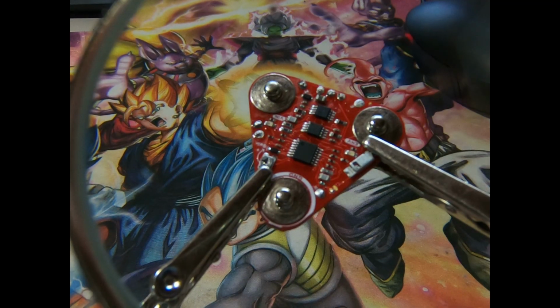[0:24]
Today, we're diving into the wild world of human-machine interface. I'm hooked up to a MyoWare EMG sensor, which I'll be using to control a servo motor, using nothing but my incredible muscles. So let's get into it.
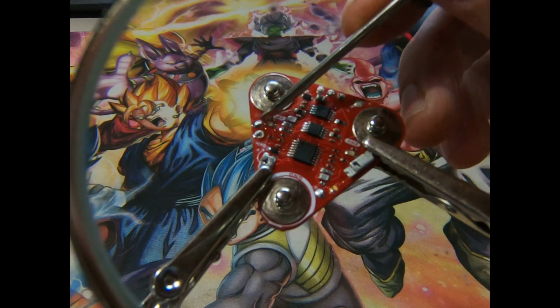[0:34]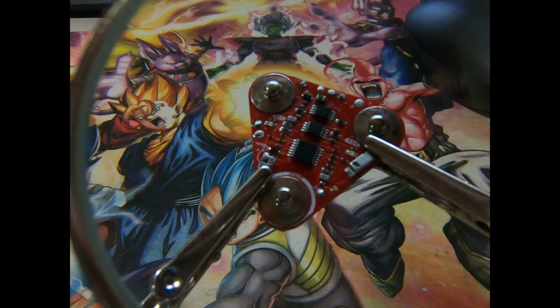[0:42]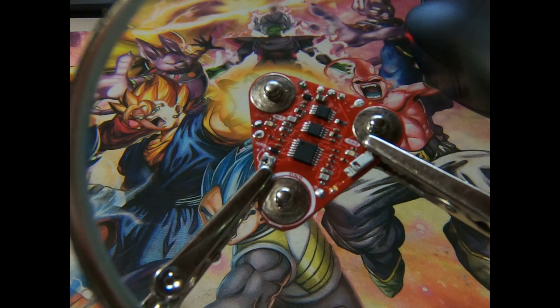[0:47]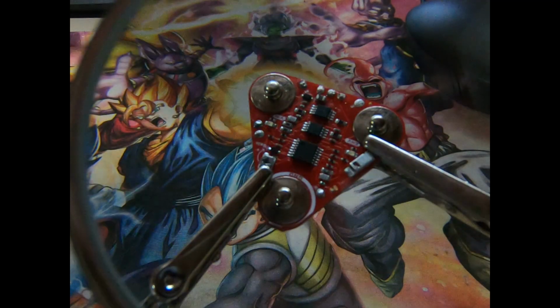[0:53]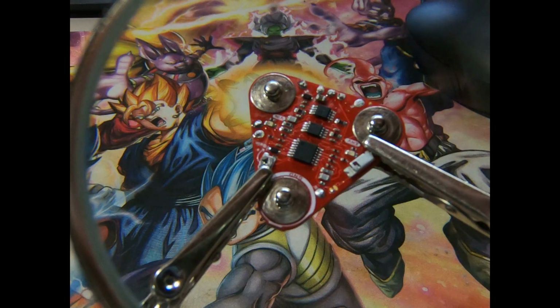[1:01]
All right, guys, it's time for confession time. If you watched episode 2, you saw me solder these headers. These three, this one right here, this one, and these two. These header pins are completely backwards. Yep, rookie mistake, I know. All these pins are soldered the wrong way, so I have to desolder them, flip them, and reattach. Moral of the story, double check your component orientation before soldering, especially for breakout boards. This will take me around 20 minutes to fix, but it was a pain I brought on myself.
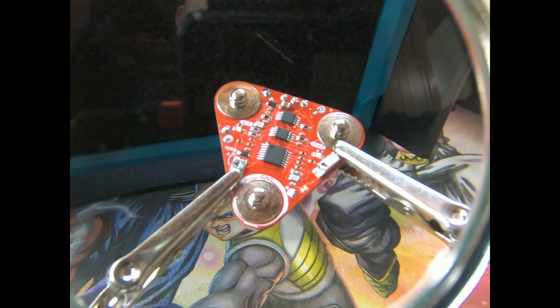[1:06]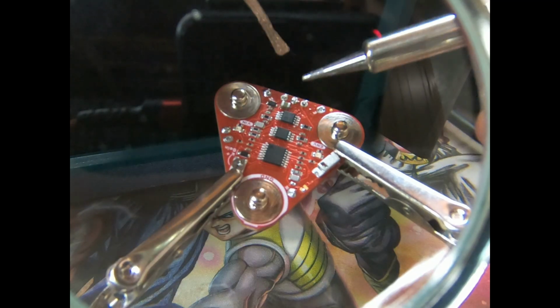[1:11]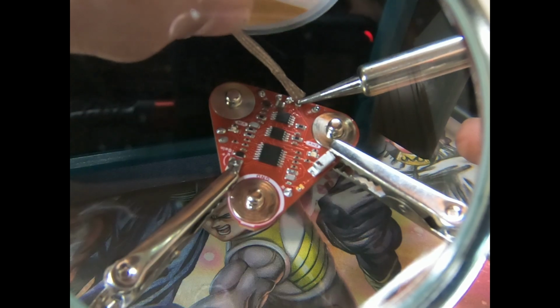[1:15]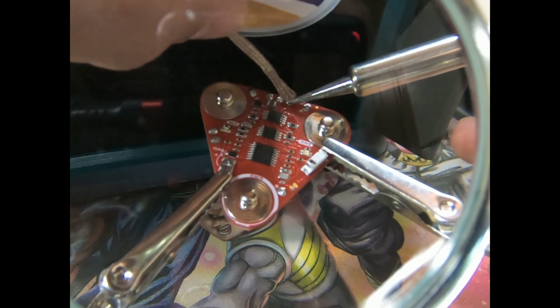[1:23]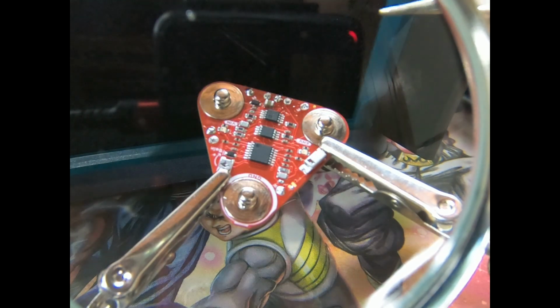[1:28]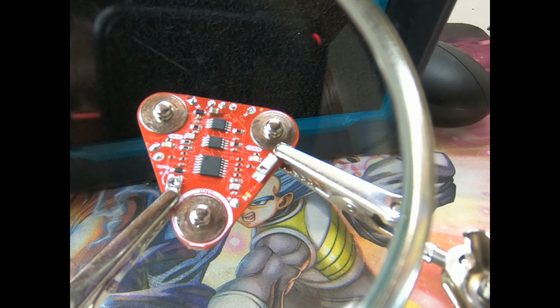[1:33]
This is where the desolder wick comes in handy. You just heat it up. Heat up the component you want to desolder, and stick it on there. And the solder will go through capillary action into the desolder wick. You might want to pull the braids apart a little, just so it increases that capillary action.
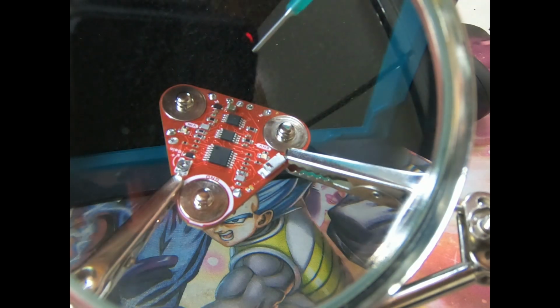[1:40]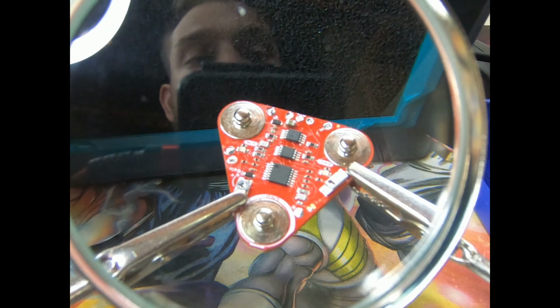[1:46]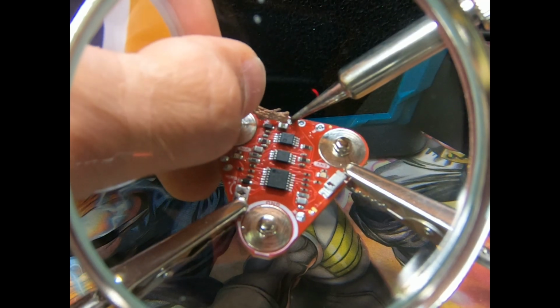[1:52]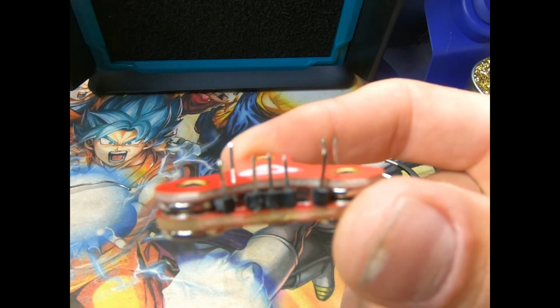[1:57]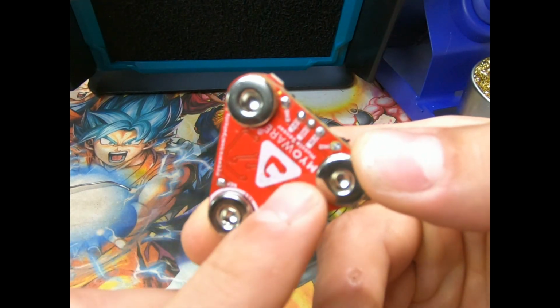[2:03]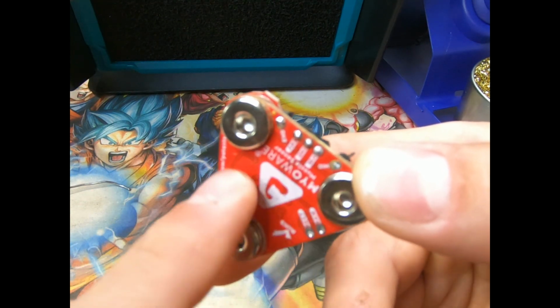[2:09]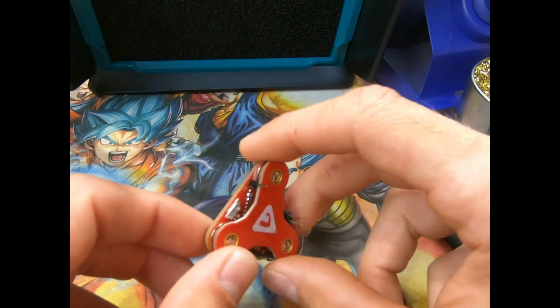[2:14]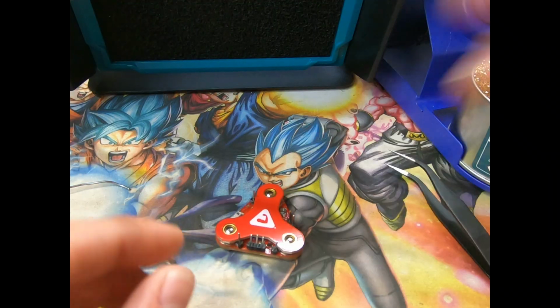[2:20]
Let's add a little bit of flux paste, help this melt a little, and we're going to try again. Just place the tip on the solder. Okay, we're all done. See? This is the side they were supposed to be on, because the way that I had them, they would interfere with the electrodes that go to my skin. So I'm just gonna clean it up with some alcohol, and then we'll start troubleshooting this, see if it works.
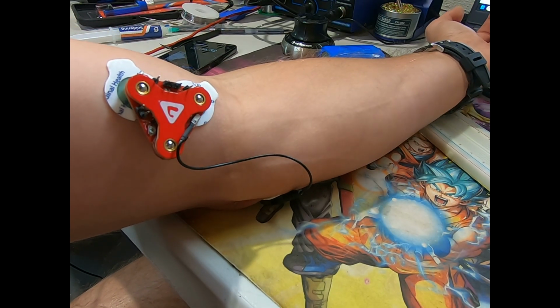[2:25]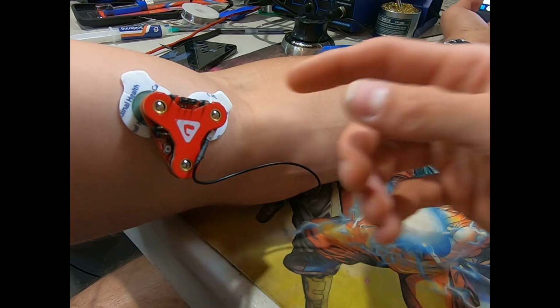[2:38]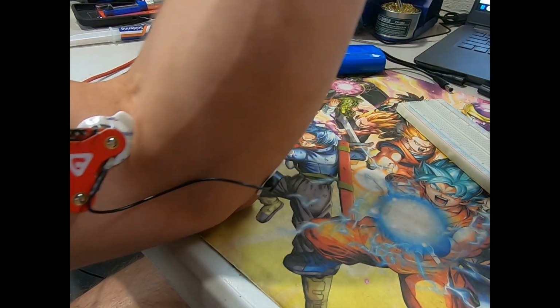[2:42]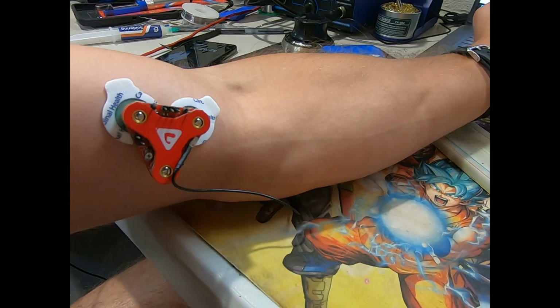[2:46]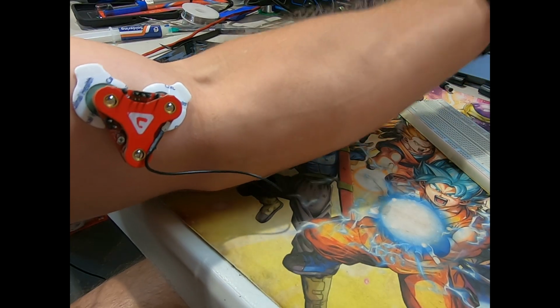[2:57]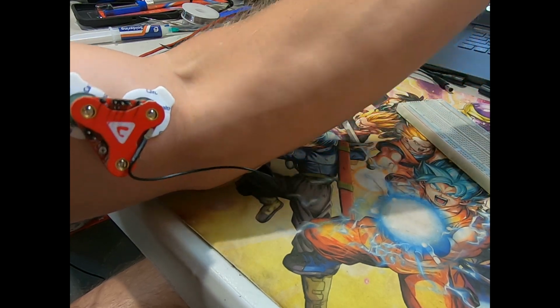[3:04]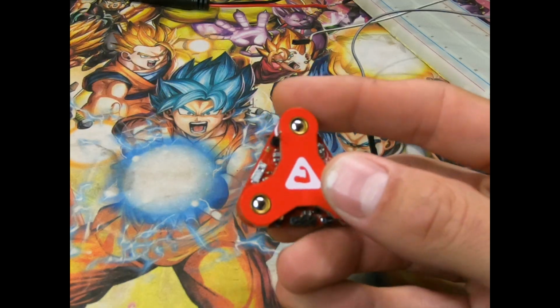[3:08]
So what's a MyoWare EMG sensor? The MyoWare 2.0 is an EMG sensor. EMG stands for electromyograph. This means it reads the electrical activity of your muscles. You stick it on your skin with these sticky electrodes and flex. This outputs an analog voltage based on your muscle tension. Super cool, right? For our exoskeleton, that means we can control a servo motor to move a 3D printed joint. This is perfect for robotic nerds like us who want to build assistive tech. Okay.
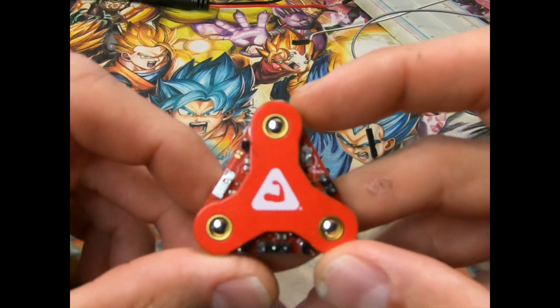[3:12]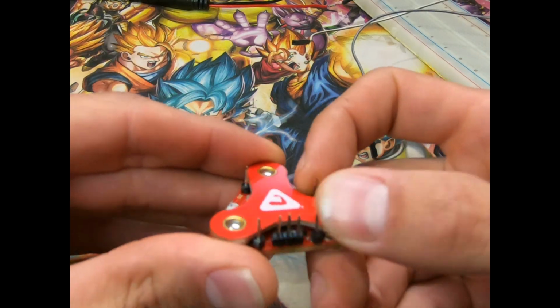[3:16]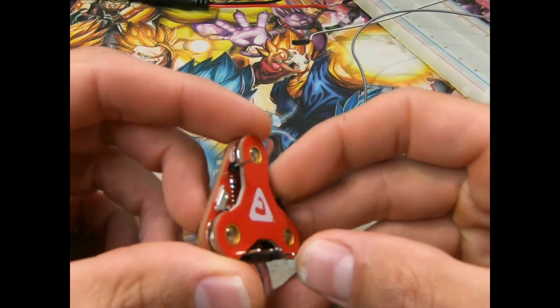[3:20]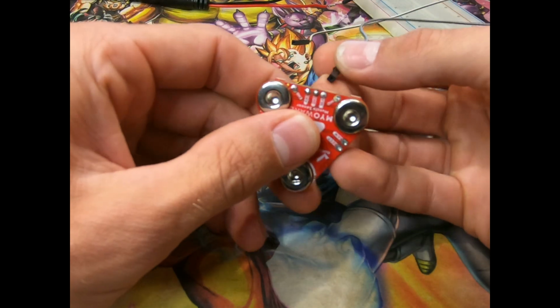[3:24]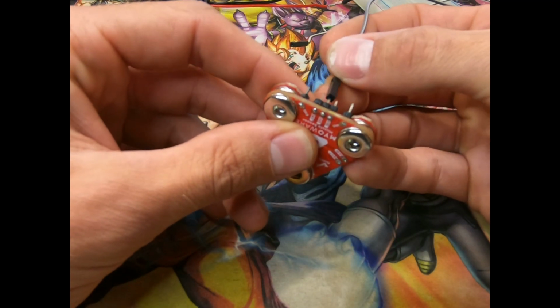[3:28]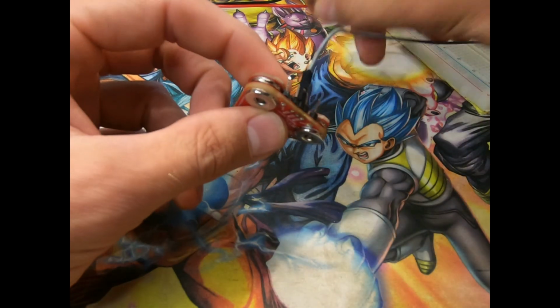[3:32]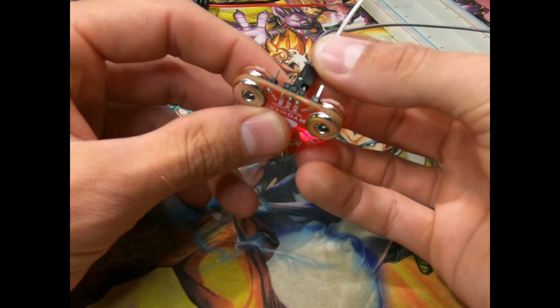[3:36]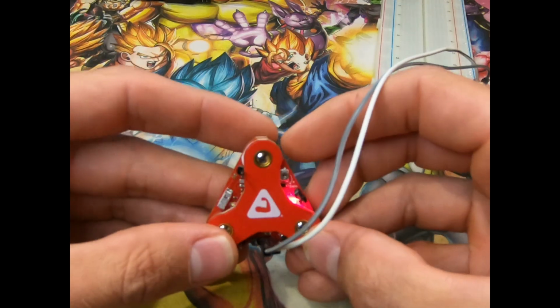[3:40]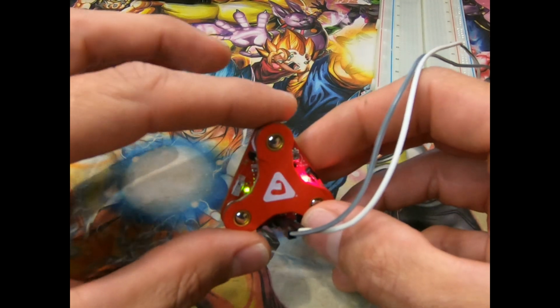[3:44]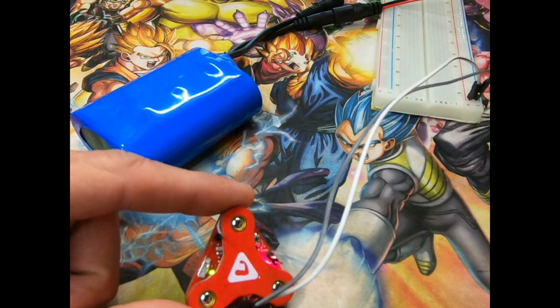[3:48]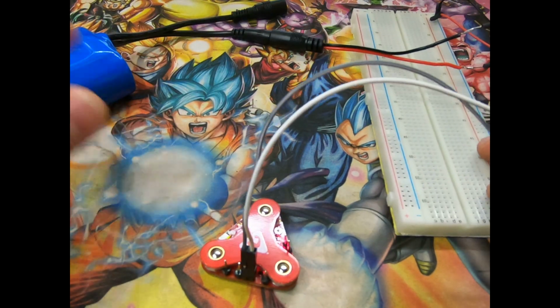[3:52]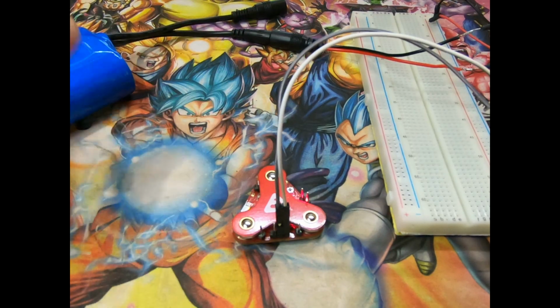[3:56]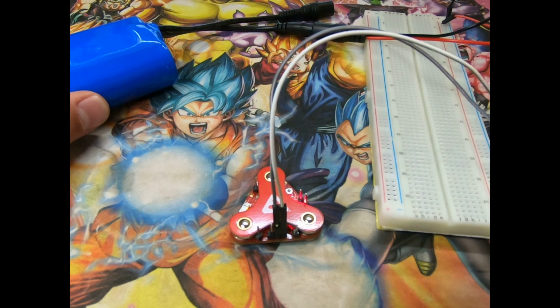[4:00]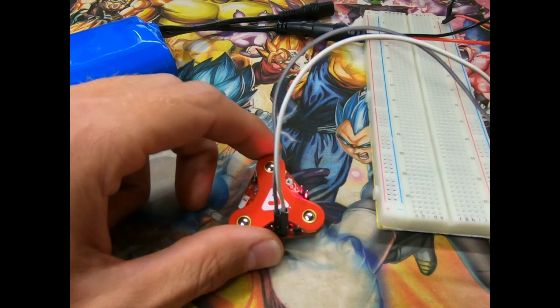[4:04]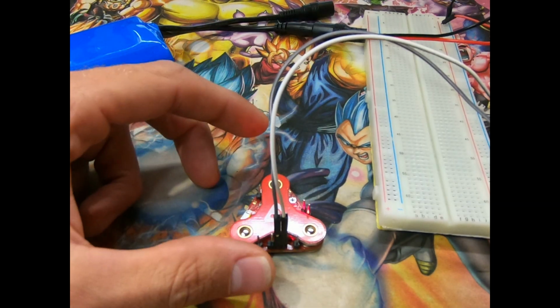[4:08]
Now that we got that out of the way, we have our header pins a little bent, but installed. Now, we have to correctly connect the ground and the 5-volt power. The way I'm doing it is, I've got this 5-volt battery pack, and I'm running it through a breadboard. The reason for this is, this power source is much cleaner than running it from the wall. The wall outlet is not a clean source of power or voltage source.
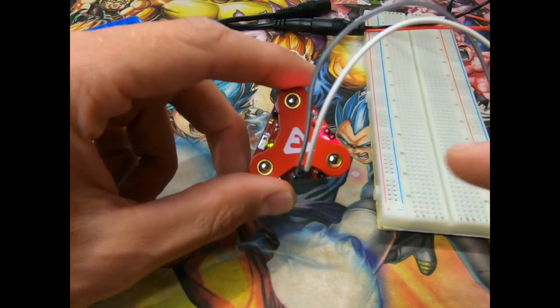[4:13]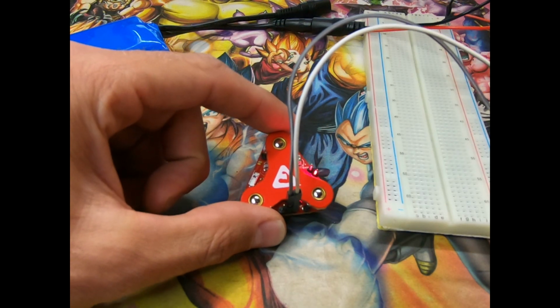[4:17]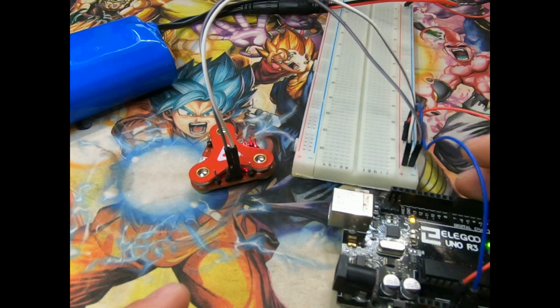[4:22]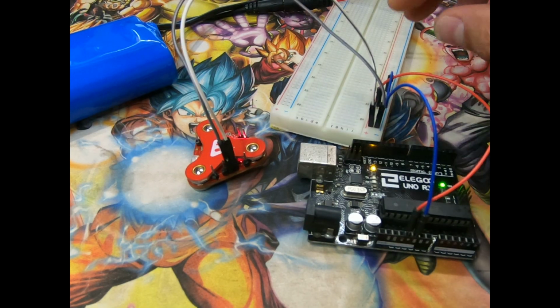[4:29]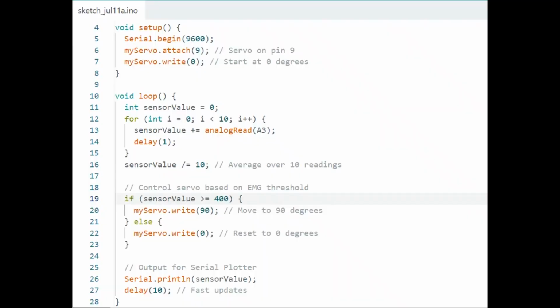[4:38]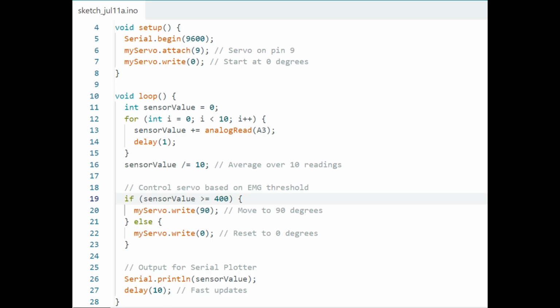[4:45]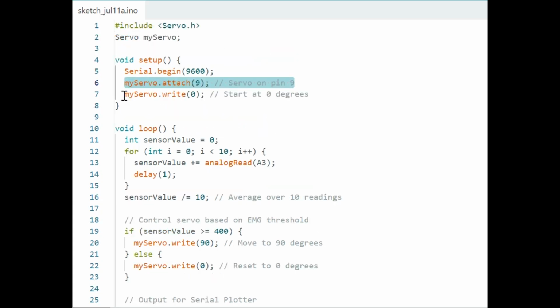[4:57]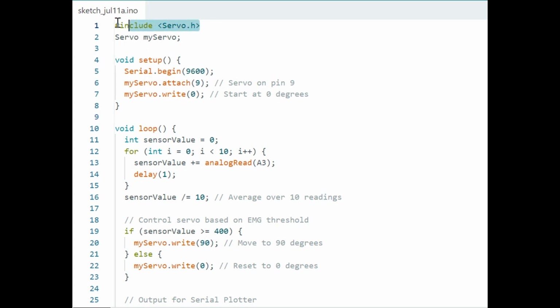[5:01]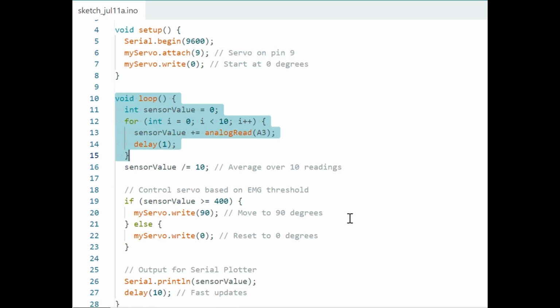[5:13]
Okay, so now that we know that it's getting power correctly, we can start to set up the Arduino. So we've got the Arduino and the muscle sensor. So now that we know that works, we can start to work on connecting the sensor and reading signals from that sensor. Now let's talk about the code. Here's the plan. We need to read the EMG signal from the A3 pin and map it to the servo angle, which I've just chosen 90 degrees. Then we need the servo to move. First, we need to include the servo library. Then we define our servo on pin 9, which will send a signal on pin 9 whenever the servo is activated. Also, we need to establish a loop for reading the sensor value.
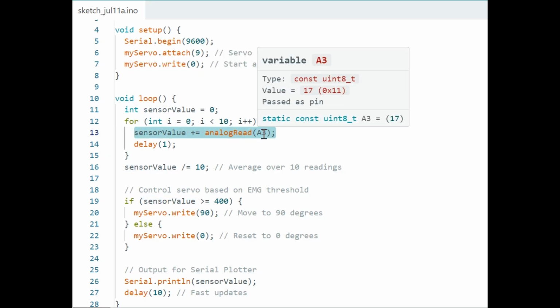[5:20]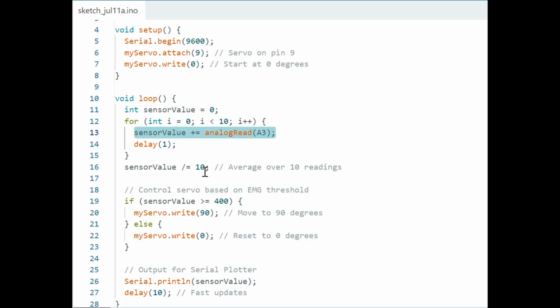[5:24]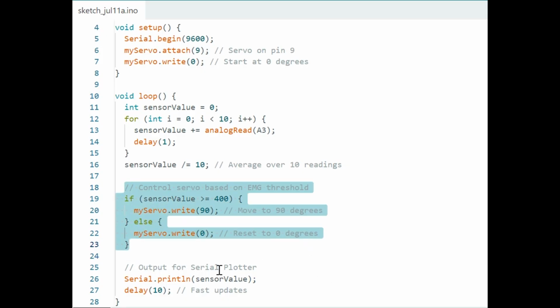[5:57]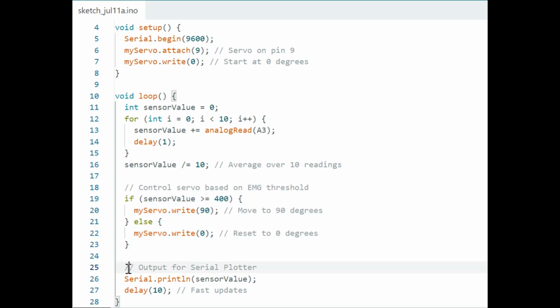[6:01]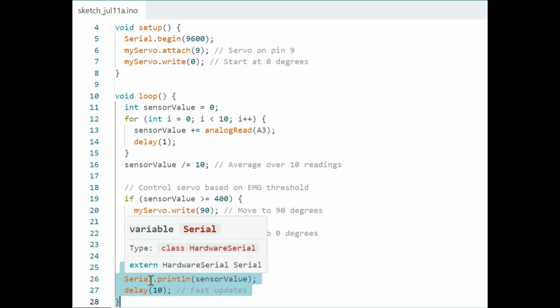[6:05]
As you can see, I've assigned the A3 pin for the sensor. In the setup, we want to start the serial at 9600, and in the loop, we want it to read the sensor value, which is done here. And if the sensor value is over 400, we want the servo to move 90 degrees. If it's under 400, we want it to reset to 0 degrees. This needs some work, and it might be causing the twitching. For debugging, I also added a serial print of the sensor value with a 10-millisecond delay, just so I could see that the sensor was actually reading.
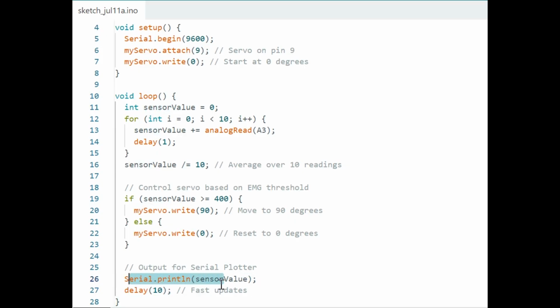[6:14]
You might have to calibrate your min and max values depending on how strong your flex is. Everyone's biceps are a little different, you know. Now, you should be able to flex your muscles and move the servo. I'll drop the code in the description and on Gumroad for free. Let's test it.
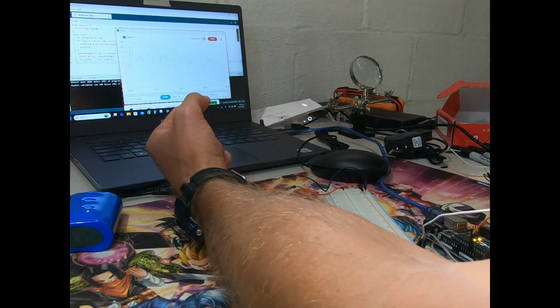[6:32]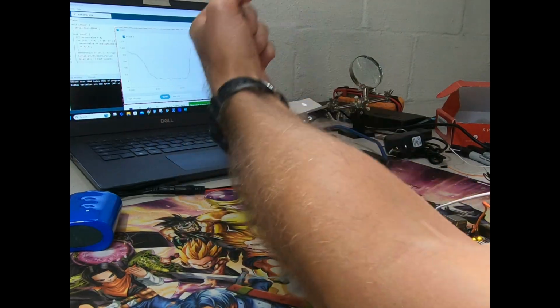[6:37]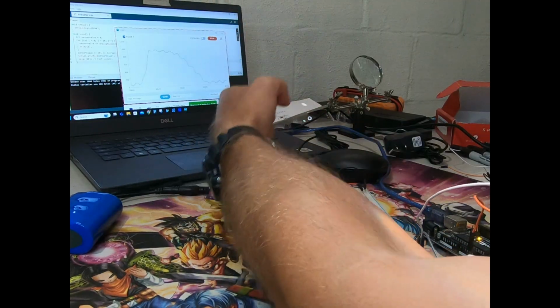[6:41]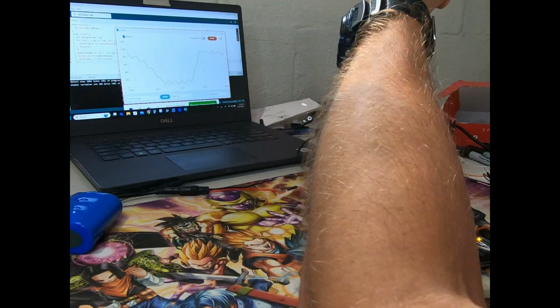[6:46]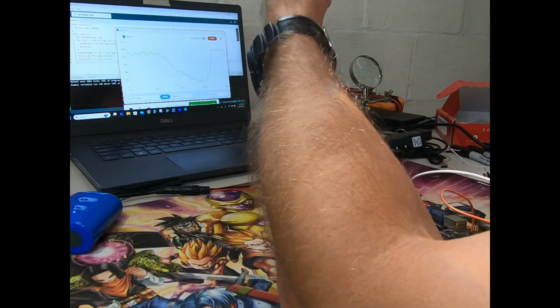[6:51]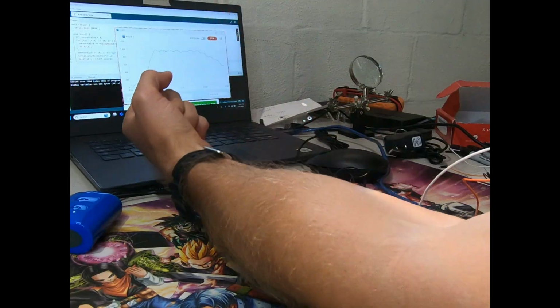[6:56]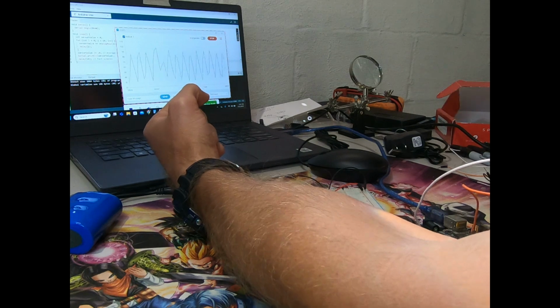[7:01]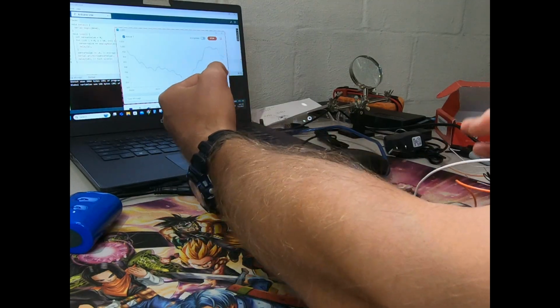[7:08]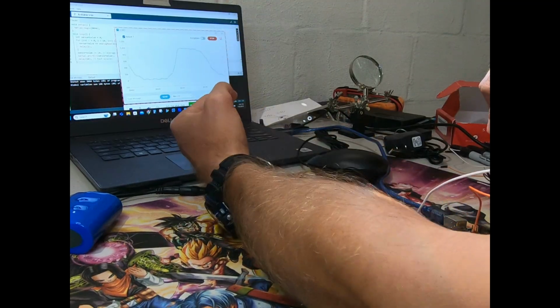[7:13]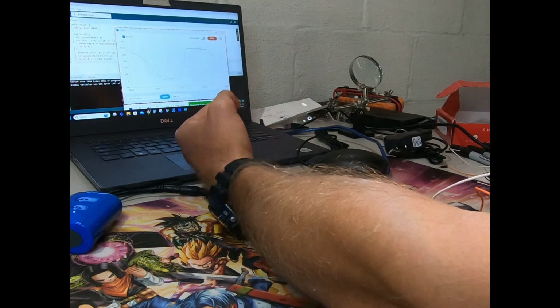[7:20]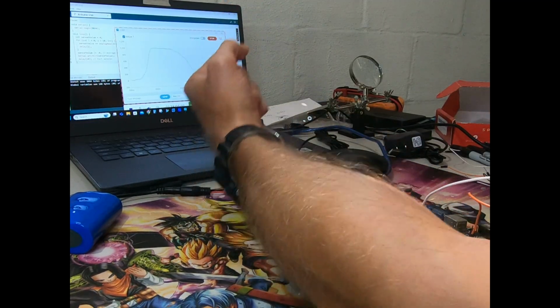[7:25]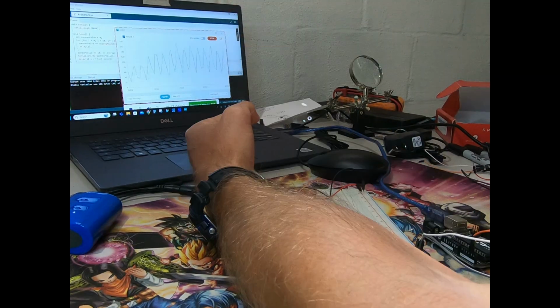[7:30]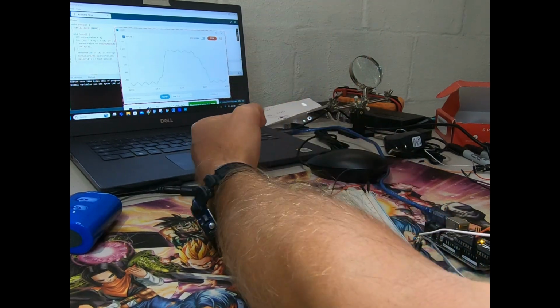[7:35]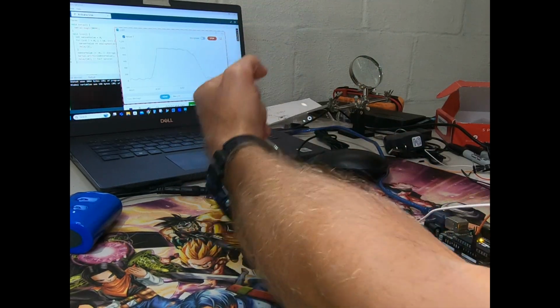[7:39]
Hopefully you can see that as I flex, the screen is showing a line that's moving along with my movement. That's the first step. Awesome. So what I've done is I've connected the power, ground, and 5 volts, and the raw output, so that the Arduino can send the signal back to the computer and the computer can read my movement. Now I have to translate that into a signal from the Arduino to the servo. So hang tight while I wire up the servo. I'll be including all of these setups and how to wire everything below.
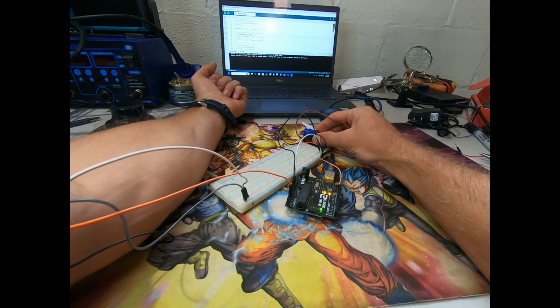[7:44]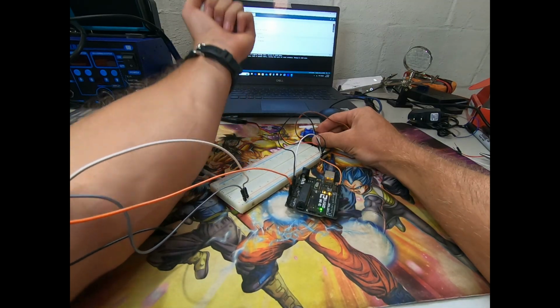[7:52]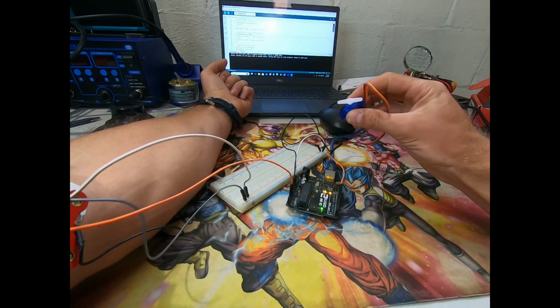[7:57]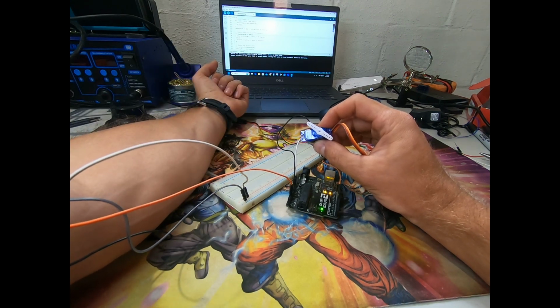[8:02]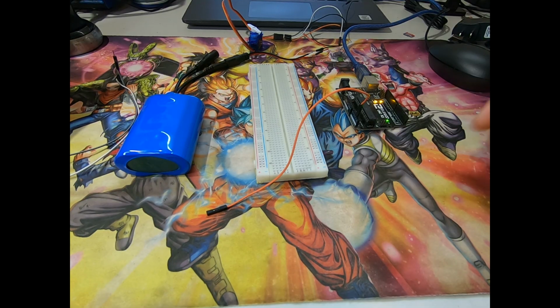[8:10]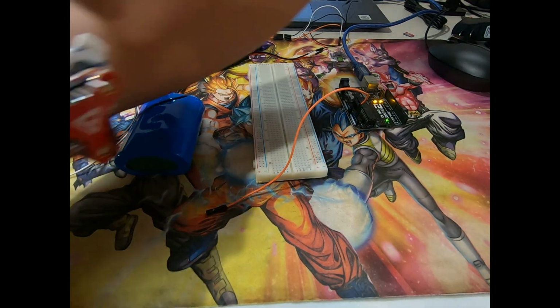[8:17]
Ladies and gentlemen, I give to you a working MyoWare sensor. There are obviously some bugs, but as you can see, when I flex, it goes to 90 degrees and then it goes back slowly. So let's hook it up. What you'll need: an Arduino Uno, a MyoWare 2.0 EMG sensor, which is currently stuck to my skin with the electrodes.
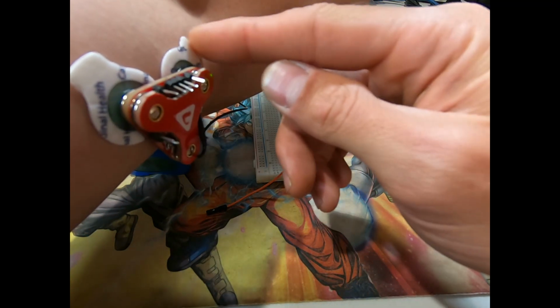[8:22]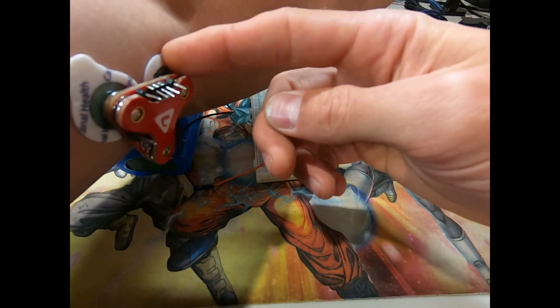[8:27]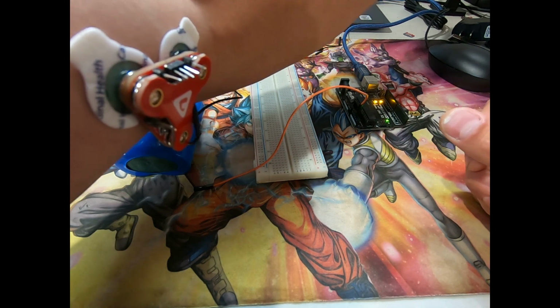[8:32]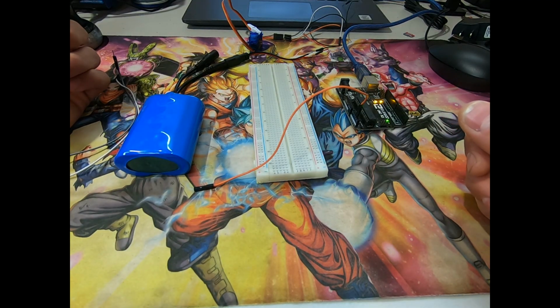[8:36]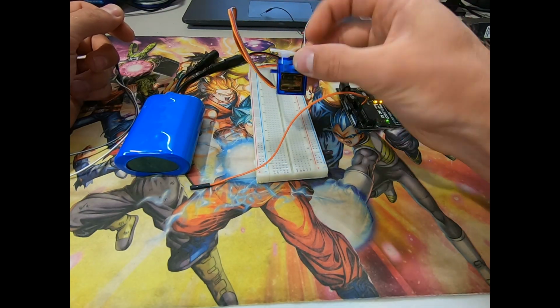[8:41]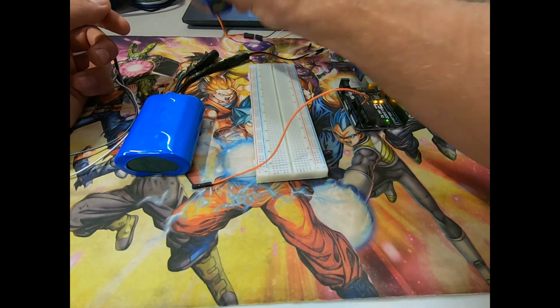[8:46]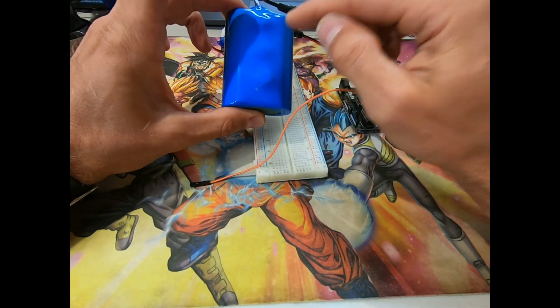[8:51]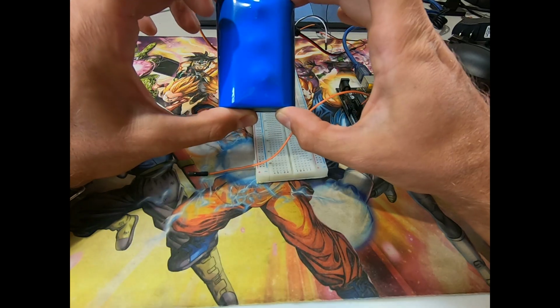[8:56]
You don't want to mess around with this too much. If you're going to use it, leave it stuck to your skin, because once you take them off, you'll need to replace the electrodes. Also, you'll need a servo motor. This SG90 is enough for our purposes. A battery pack. This is important because this will supply the clean power, which means no noise, and some jumper wires.
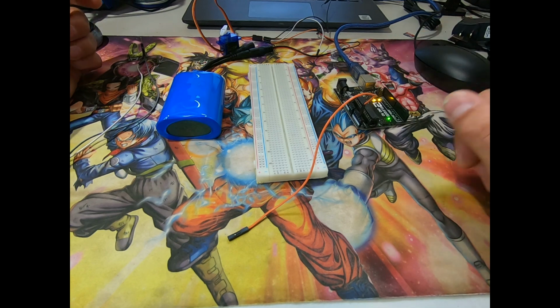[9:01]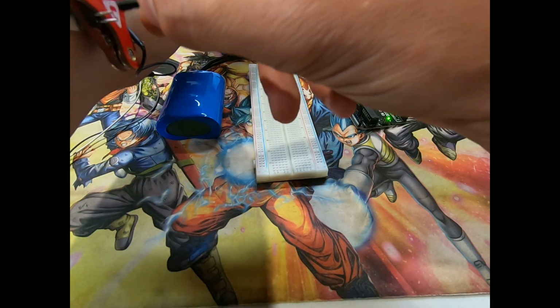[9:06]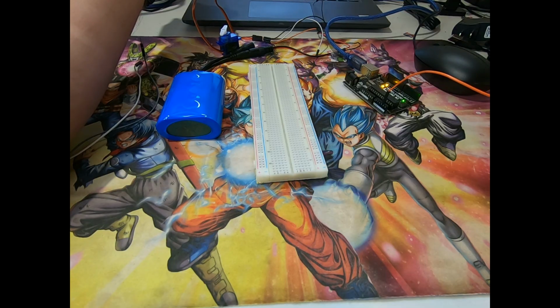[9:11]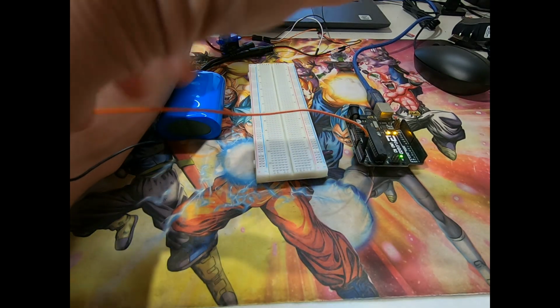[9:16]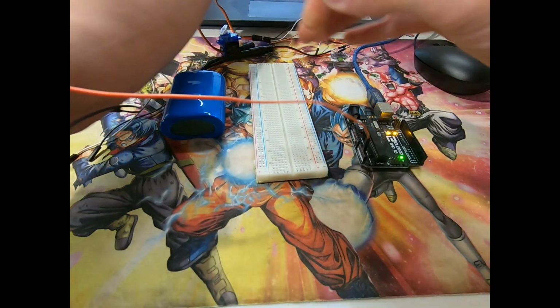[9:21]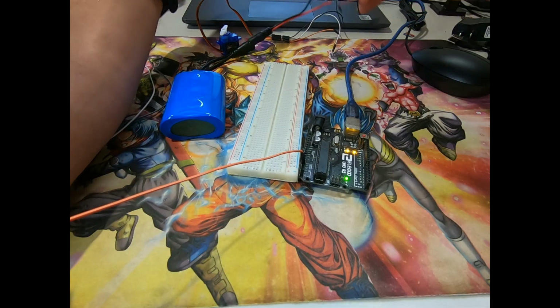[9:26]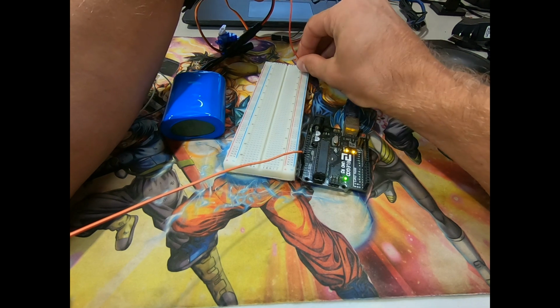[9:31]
So here's what you're gonna do. You're gonna hook up your MyoWare EMG sensor to the Arduino. I'm using the A3 pin, analog 3, to connect to the raw of the MyoWare EMG sensor. Then, well, you need power, so red goes to red, which is the 5-volt supply, and black is ground.
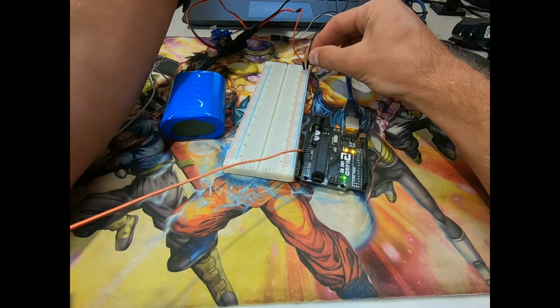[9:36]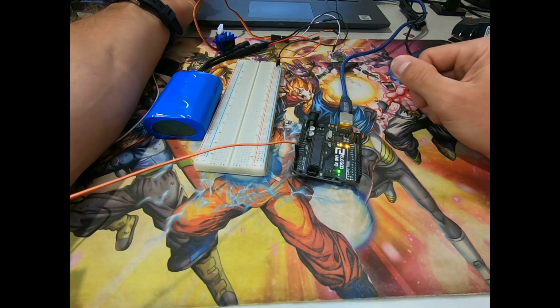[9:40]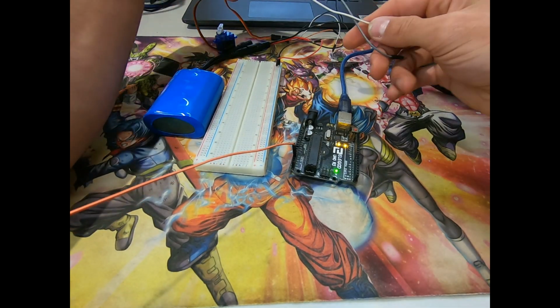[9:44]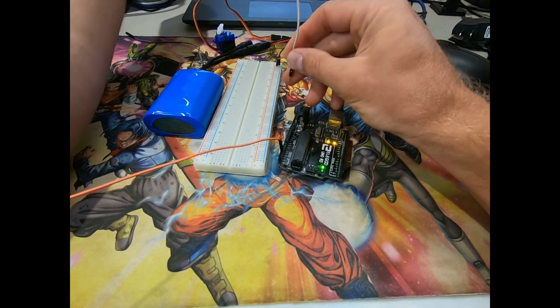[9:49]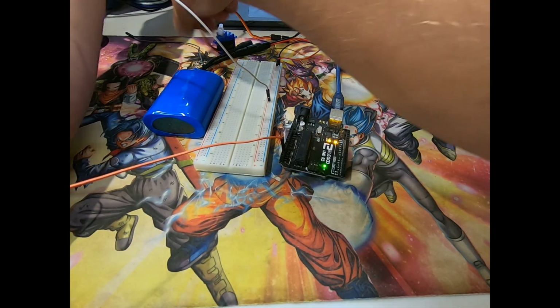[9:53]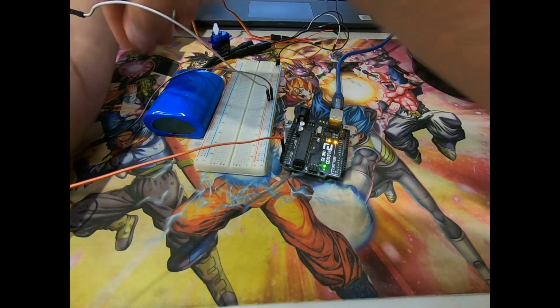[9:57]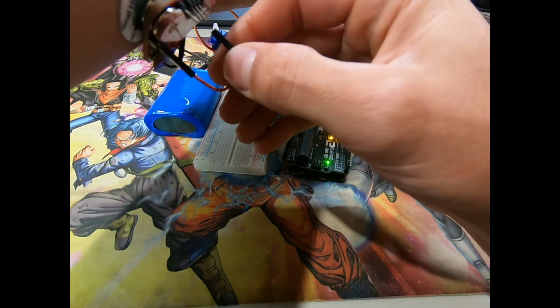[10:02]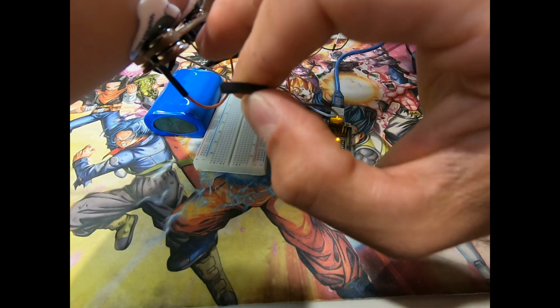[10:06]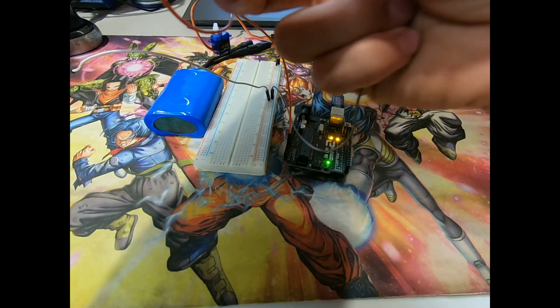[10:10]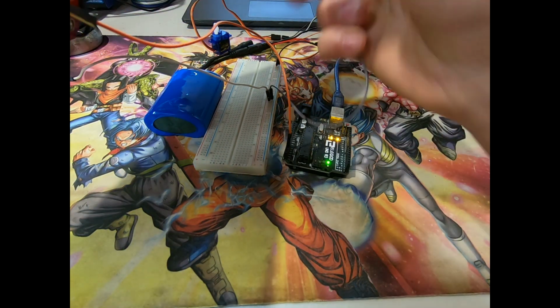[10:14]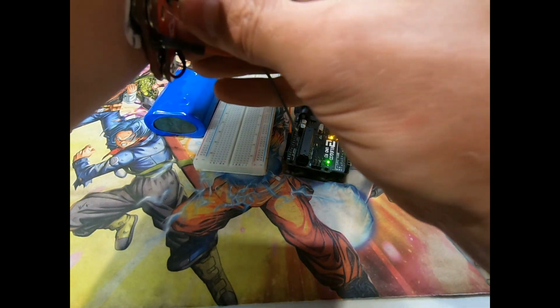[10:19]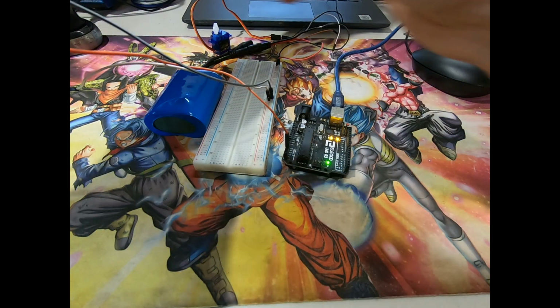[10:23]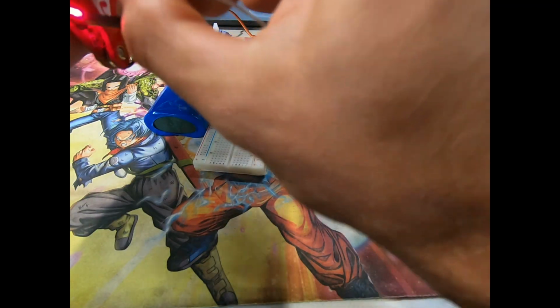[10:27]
Next, you'll want to power your EMG sensor, which I will be using white for 5 volts and gray for ground. Make sure you connect these to the right position. They're labeled on the back here. It says VCC and GND. So gray is ground, which is the middle pin. And white is, well, sorry, it's not VCC, it's VIN. So there we are. Once you're connected, it should light up like this.
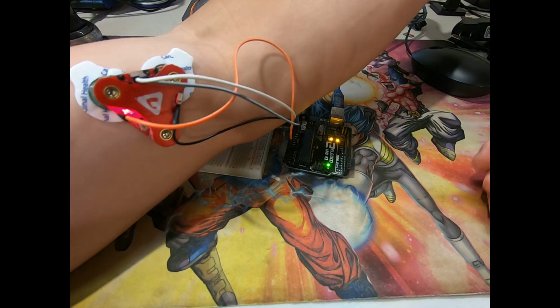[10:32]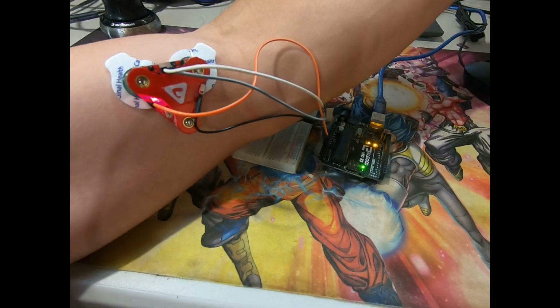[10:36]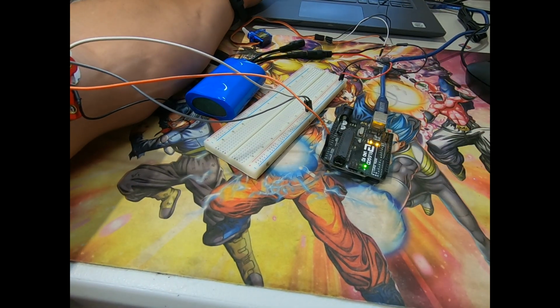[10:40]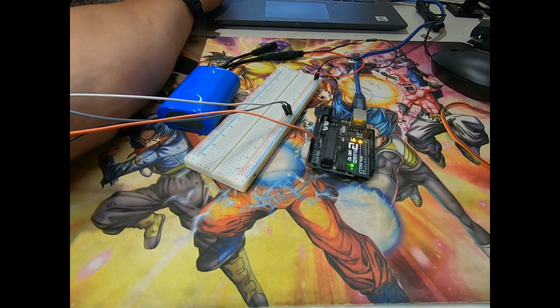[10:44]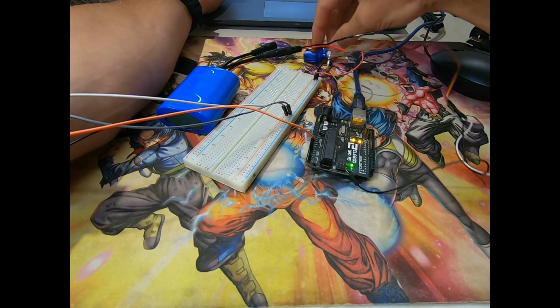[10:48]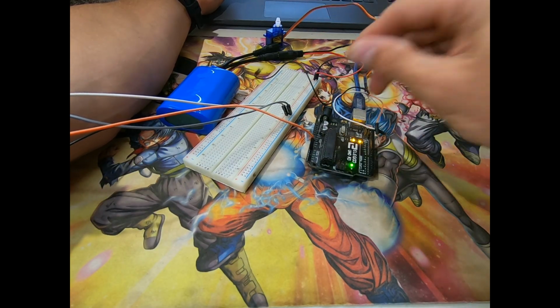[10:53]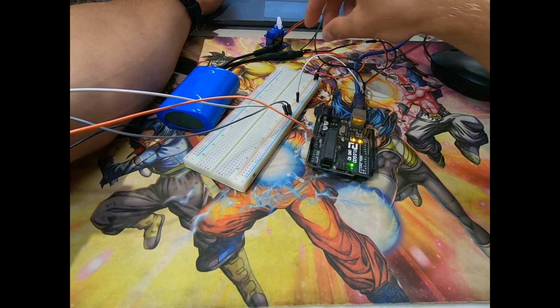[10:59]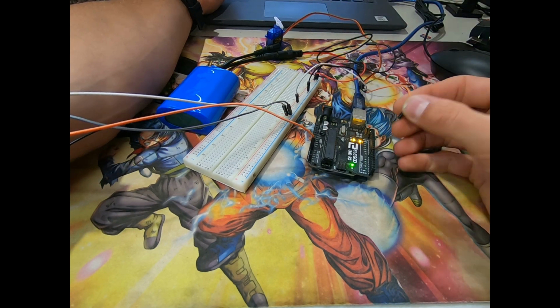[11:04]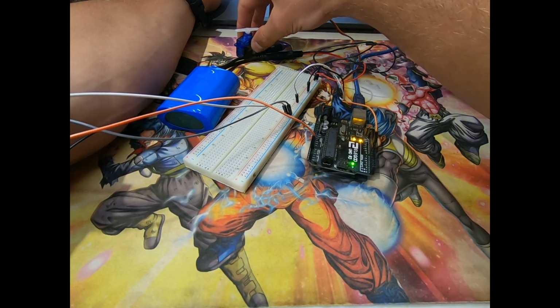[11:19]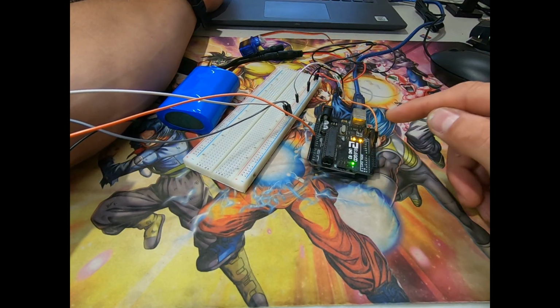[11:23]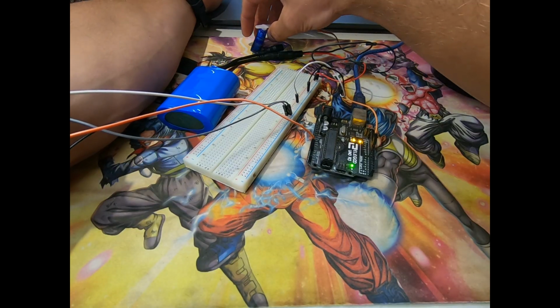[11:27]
Put that to the side. Next, you want to set up your servo motor. I'm following a similar color scheme. White goes to power. Black goes to ground. And orange, in my case, I'm connecting it to the digital pin 9. I've already programmed the Arduino to read my muscle signals and output a signal to the servo motor so that whenever I squeeze,
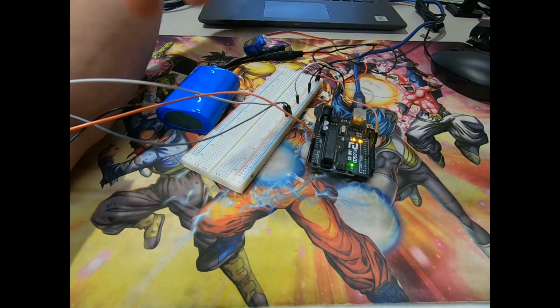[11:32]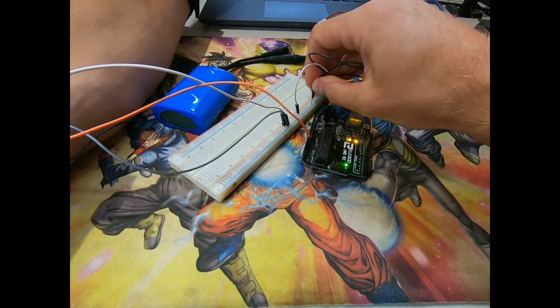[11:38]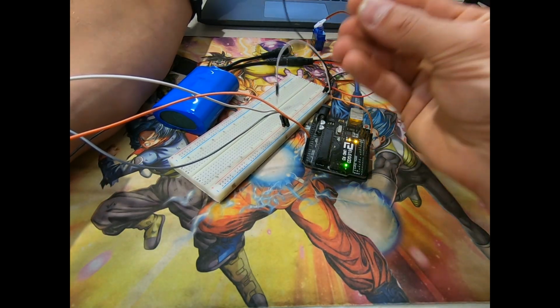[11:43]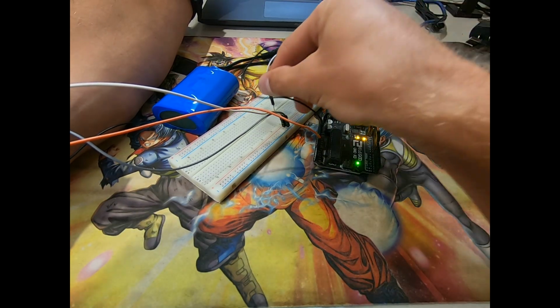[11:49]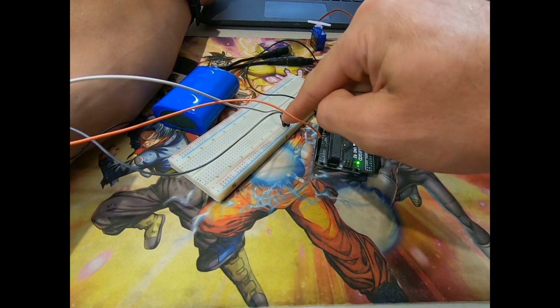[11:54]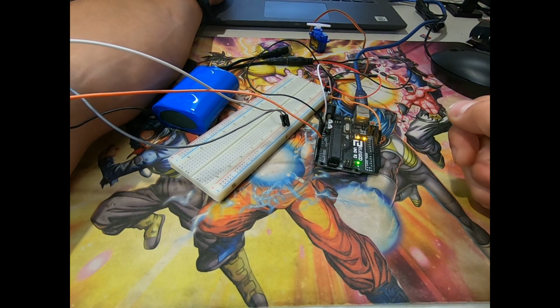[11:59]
let's see if this will cooperate with me. Wait. I ran into this issue earlier. You do not want to connect the servo and the Arduino to the same place, ground and 5 volts on the Arduino. That way it doesn't interrupt the flow of power to the EMG sensor or introduce noise into the EMG sensor circuit. So as you can see, it's twitching. That's a little bug I have to fix.
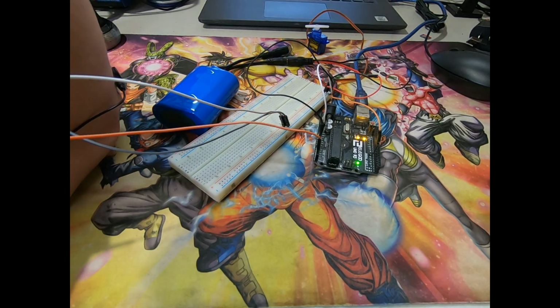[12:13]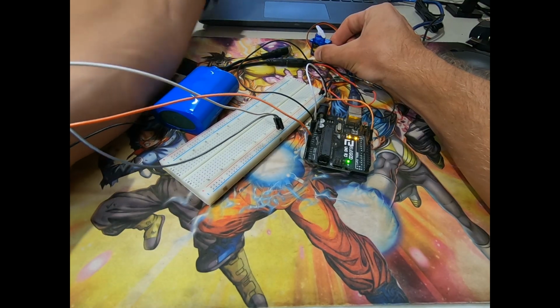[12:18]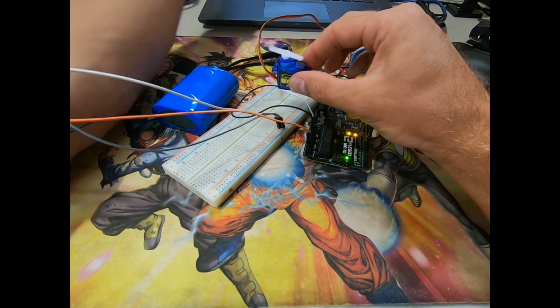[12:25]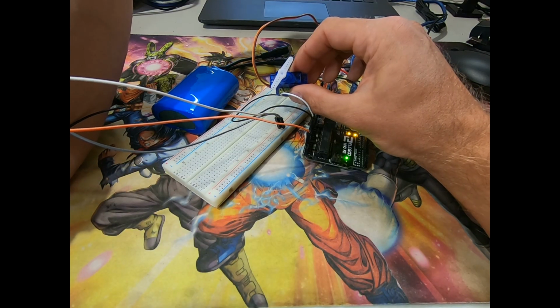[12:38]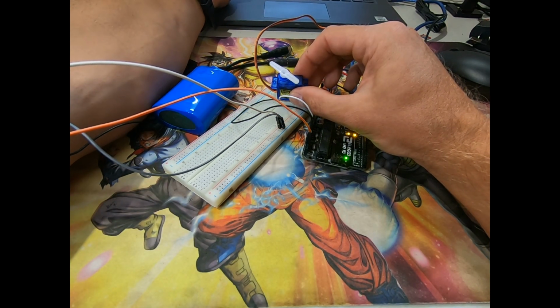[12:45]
But if I flex, you can see it's moving. I have to clean up the signal a little so it's not twitching so much, but you can clearly see that when I flex, it moves to the 90 degree position, not exactly, but 90 degrees from zero. And then when I relax, it goes back 90 degrees.
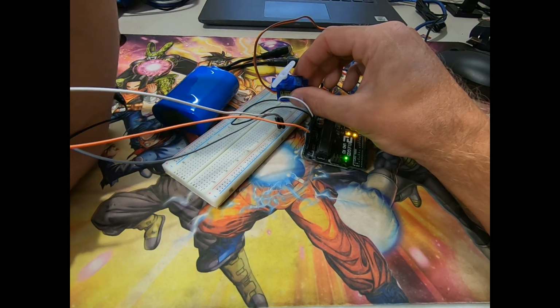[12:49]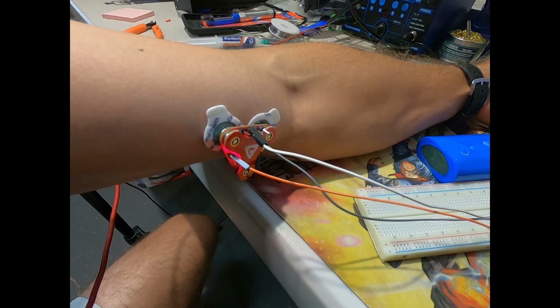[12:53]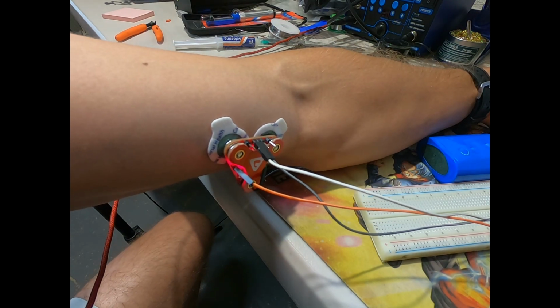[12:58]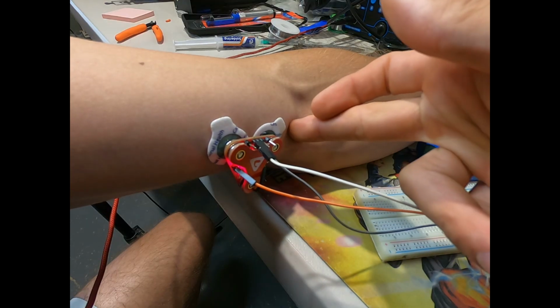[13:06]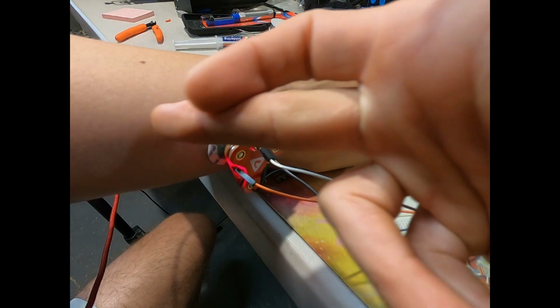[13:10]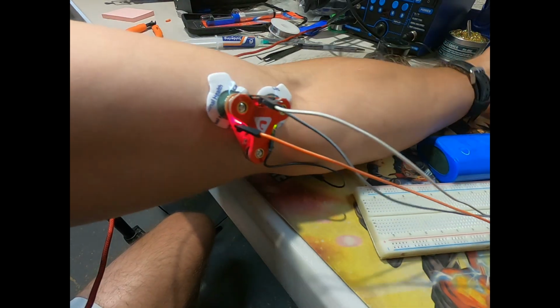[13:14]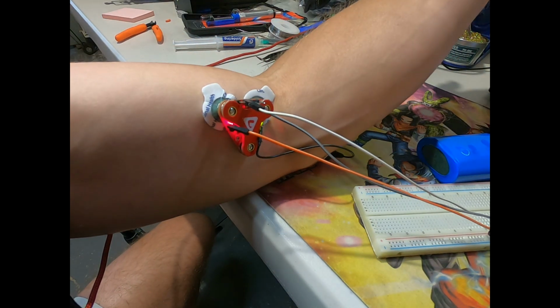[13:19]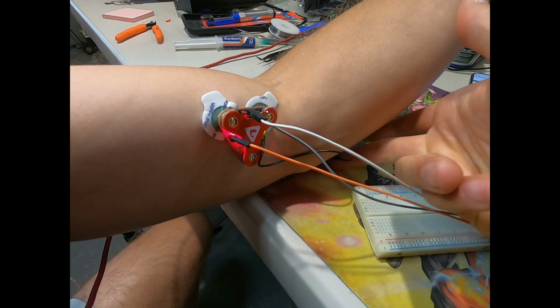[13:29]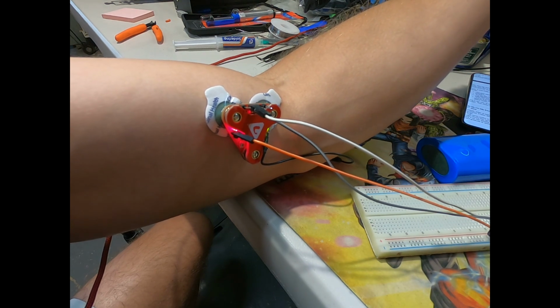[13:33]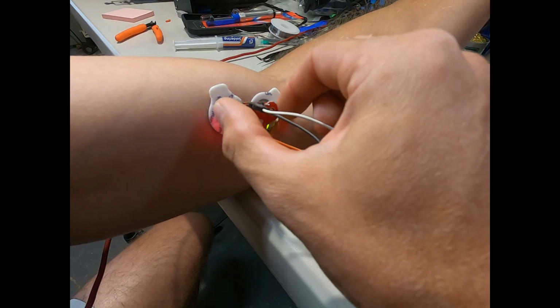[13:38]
If your EMG signal is noisy or weak, you can check these things. Make sure that your EMG sensor is set with the end near the end of the muscle and the mid toward the middle of the muscle or the belly. You also want to make sure that this reference electrode is placed on a bony part of your body. This will just serve as a reference, similar to a ground, basically. No signal here, and there's a differential in signal here.
This servo control is just the start for my exoskeleton. Next step, we're going to mount the servo to an exoskeleton joint and see if we can move it in sync with my arm. Eventually, we'll graduate to stronger actuators, maybe linear servos or pneumatic assist. I'll also try to print as much as I can on my 3D printer.
Want to build your own? Next video, we'll explore adding multiple servos, integrating them on 3D printed parts. What do you want to see? More EMG, CAD, or 3D printing?
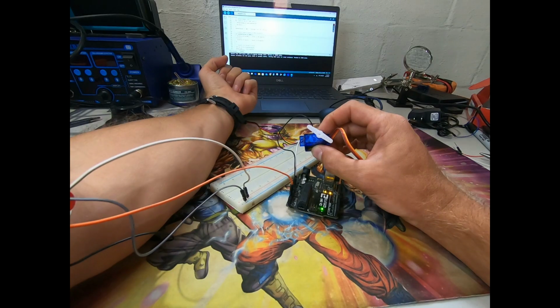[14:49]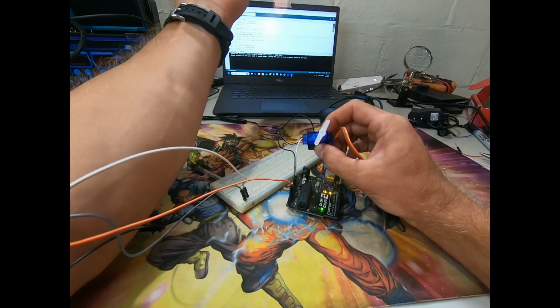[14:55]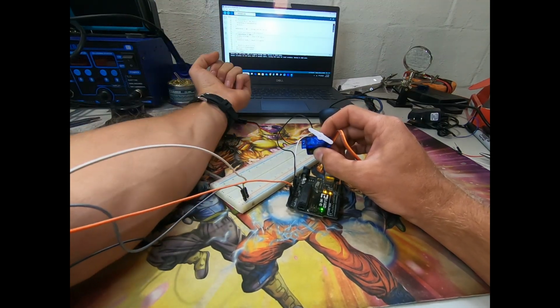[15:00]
I am Iron Man. Bow down, bow down, bow down...
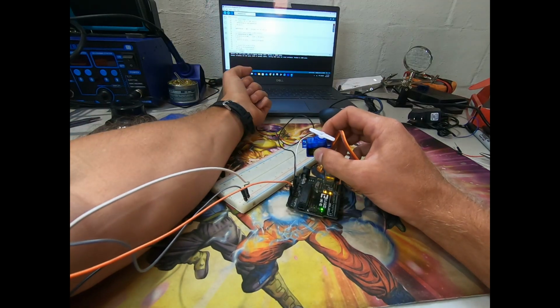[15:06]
Well, maybe not yet, but coming soon. Today, we're diving into Wild World.
Okay. I'm hooked up to a MyoWare 2.0 EMG sensor, which I'll be using to control a servo motor. My incredible muscles, I messed up again. Nah, la, la, la. Boom.